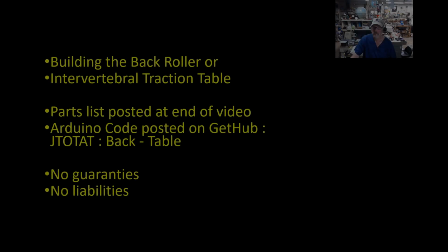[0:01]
Well, this video is a follow-up of my video I had on my back rolling table or my intervertebral traction table. I've had some requests for some additional information, so this is what this video is all about. I've gone ahead and uploaded the Arduino code to GitHub under the JTOTAT channel, so to speak, and it's under the repository back table. You can just download the code there.
And again, there's no guarantees here. I'm doing the best I can to make sure everything is accurate. No liabilities implied. You're on your own building this thing, and if you screw it up, well, you'll learn by it. But go in here kind of with your eyes open. This is a big project.
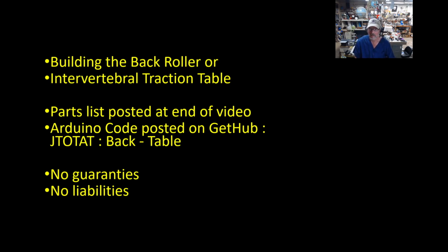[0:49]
For me to build this, I had to be able to weld, for my version anyway, weld aluminum and weld steel, and do woodworking projects, with some skills in wiring and coding. Then put them all together with a powertrain and have it work. And I think it's well worth it. I've really enjoyed the outcome, and other people have enjoyed it as well. But I can see why these things cost thousands of dollars, because there is a lot of work in building these things. But if you want to go this route, that's what this video is all about.
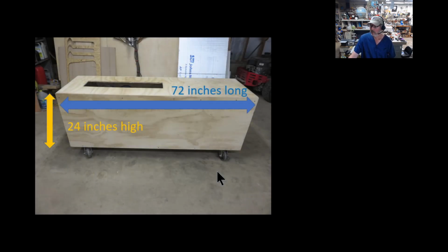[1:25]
So first off, build a box. Now it looks like it's not very square, but that's just a camera perspective. It's 72 inches long, 24 inches high, and I used 5-ply plywood. Pretty good grade of plywood here too.
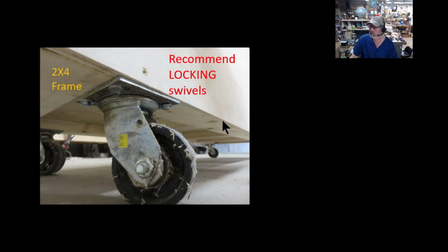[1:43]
I really recommend the locking swivels, because I found out when people get up in this thing, including myself, you're dizzy. It's universal, everyone who has used this, when they first get up, says, wow, I'm dizzy. If I had put locking swivels on this, then if they have to use the table to brace themselves, it's not going to roll away.
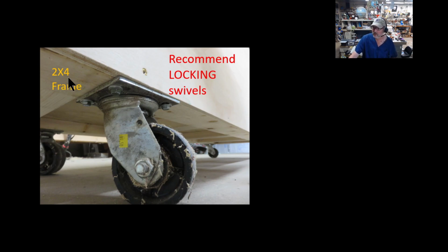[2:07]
You can see some additional framing of 2x4s I used here, because there's a lot of stress inside this plywood box. There's another box inside that rolls back and forth, and lots of weights, and I'm on top of it and everything. So instead of just having the plywood taking all that stress, I put some additional bracing underneath, and it's been working fantastic.
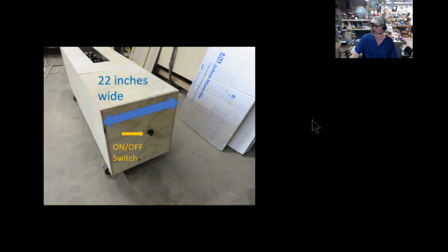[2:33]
It's 22 inches wide. Now the top you see here is not securely fastened onto it. It just sits into a little recessed area. I did mount an exterior switch. This is nothing more than a cutoff switch to the battery. When you flip it on, it energizes the Arduino. It homes itself and starts the whole routine.
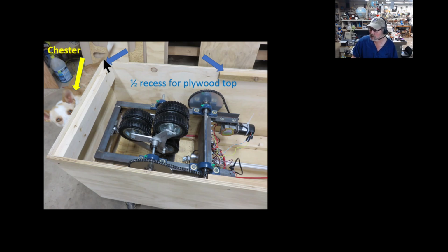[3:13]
And the way this thing does it, I talked about that in my video. It does half the back in one direction, and then it reverses the motor direction for the wheels, and so it helps to decompress both areas. It's been working good. The top I just recessed with 2x4s and some 1x's here, and that's what the top fits into. And there's Chester. I didn't even realize he was in this picture until I saw it later. And the braces don't even go around the perimeter. I did not need them all the way around, the plywood itself has enough strength to span that.
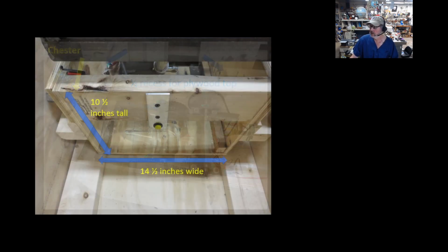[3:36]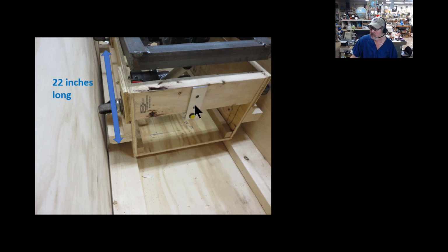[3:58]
It is 10 and 1/2 inches tall and 14 and 1/2 inches wide. This is the interior box that is pushed and pulled along, and this is the box that holds all the gears, all the motor and all the electronics. It's very strong. There's a 2x6 here in the back. The other, it's 22 inches long. Here's the 2x6 I was just talking about. It's also made of the 5-ply plywood.
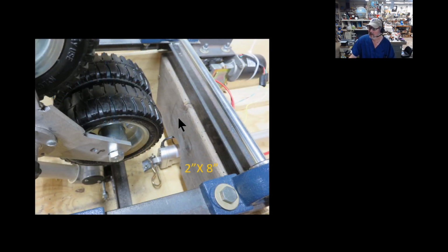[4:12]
I put in some additional shims for these extra casters. I'll talk about why they're there. There's the backside. It's actually a 2x8 I used in the backside, and this thing's all lagged together and very strong. I did cut a notch on the bottom 2x8. That's just for the 24-inch linear actuator that actually pushes and pulls this whole mechanism back and forth.
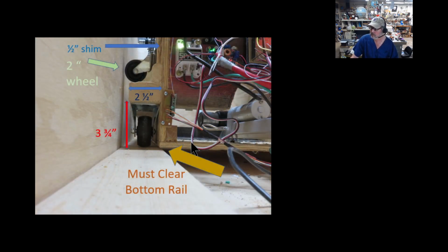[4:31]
I couldn't easily measure these when it's already built, but it doesn't really make that much of a difference, because if it's higher or lower, you'll just have to adjust where you put this 2.5-inch cut down 2x4, for my size. As long as it clears in the bottom.
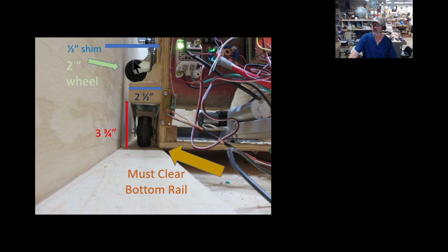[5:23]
Now, the reason these top casters are on here with this little shim to get them in the right position, is because there's no tracking mechanism. This thing just pushes back and forth. So these casters, and I had 2 fixed and 2 swivel, and if I would have had all fixed, I would have used that, but this is what I had on hand.
Their job is to keep this tracking correctly. So if it gets close to one side, the caster takes over and pushes it back, and I'm sure these are working. I never hear them. I've never had a problem, so if it's not broken, I'm not going to fix it. You can see in the picture here, I did add a little bit extra bracing on this 2.5-inch piece here, because there's a lot of stress on this. I'm on it, the motor's on it, everything's on it, so yeah, I want to make this pretty strong.
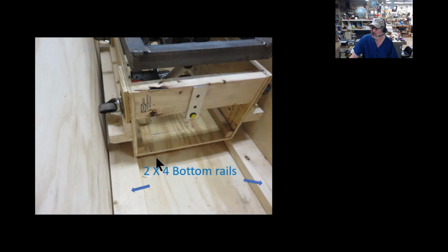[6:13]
Okay, I used these 2x4 bottom rails, and again, I made this a little bit bigger than I had to, because this is the first and only one I've ever built of these things, and I wanted to make sure I had plenty of space. However, when this is just dragging on the bottom on the plywood, the revolving wheels were pretty far below, an inch and a half below the plywood. And I thought it was just a lot of extra time, but you had to activate the wheels to raise it up above the plywood.
So actually lifting it up 1.5 inches on these 2x4s, an inch and a half thick, took the roller right to the top of the plywood where it should be. So when the roller top is all the way down, the wheels are just the height of the plywood. And that's nice because you hardly even feel it, but then you can control it up and down with your little remote.
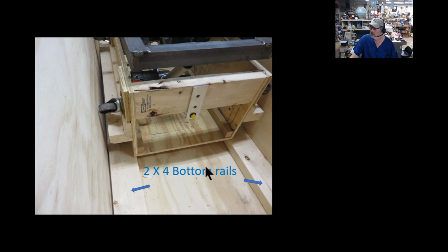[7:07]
So now on top of that box I built this framework of iron or steel here, and it's 14 1/4 inch by 21 inches long. However, it's got some extensions. On this side, you can see back here, it's extended out a little bit because I have to have that pillow block bolted to something. And I also put this extension on the other side with the motor, and that's actually not the top though. That's another piece of angle iron I welded on upside down. I'll explain why I put that on there to help hold the motor here too.
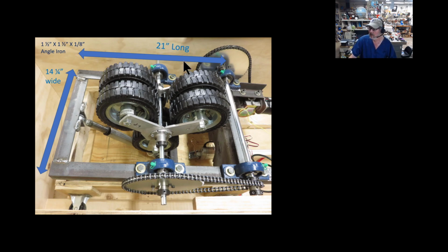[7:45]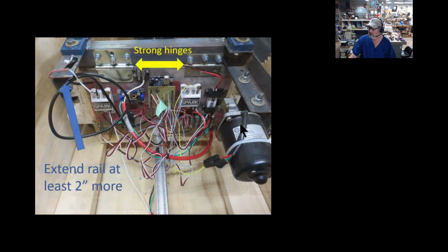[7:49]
So this whole thing is actually one piece, and it actually pivots on the back here. In fact, this is what I'm using. I didn't even have a pair of hinges, but I had these 2 strong hinges. I just used what I had, and I drilled a hole where I needed to, and bolted the hinges on, screwed them to the 2x8, and it's very strong, had no problem with it.
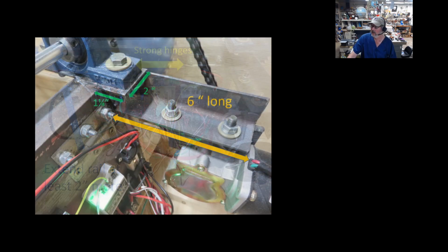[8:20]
Now this is the 2 inches. I recommend you extend the rails at least 2 inches on this one side. That'll give you space to put the bolt for the pillow block on that side, and the pillow bearing on that side. And the other side, I welded the 6-inch long extension. The reason for that is, when this thing raises up, the motor hanging under it is going to get closer to the electronics. So you've got to get this far enough back so you're not going to have any conflicts of this thing hitting any of the electronics back there. And it will not get up that high to get that close. So this works fine for me, 6 inches here.
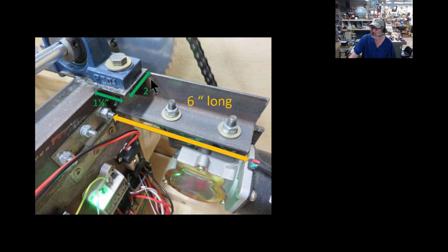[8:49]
Now again, I just used this 1.5 inch by 1.5 inch by 1/8 inch angle iron, same thing I made the frame out of here. And I welded another section here of 1 1/4 by 2 inches just on top. And it doesn't quite look like it on the picture here, but this is all one plane. These pillow block bearings like to be bolted on one surface, one smooth surface. So I welded it up and ground it down, and it works just fine.
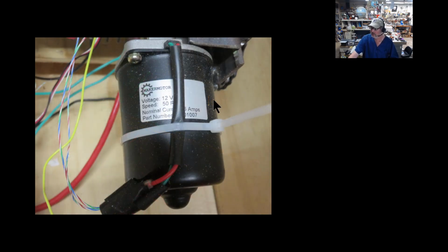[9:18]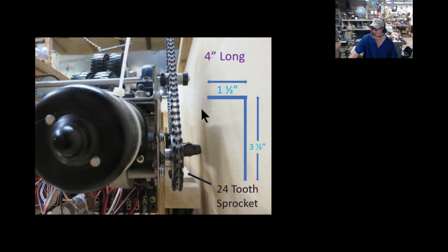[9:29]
Now, to mount this motor, this is the 12-volt, 50 RPM maker motor. You can just look that up, and they still sell these things. To mount this, I took that same 1.5 inch angle iron, and what I did, I welded another 2-inch piece on that. So the angle iron now is 1.5 inch by 3.5 inches, and that's this piece that you have a hard time seeing here, but I bolted that in underneath of that additional piece of angle iron. I put it upside down. This is why it would mate correctly. And I also have the 24 tooth sprocket, and all my sprockets and chains are size 35.
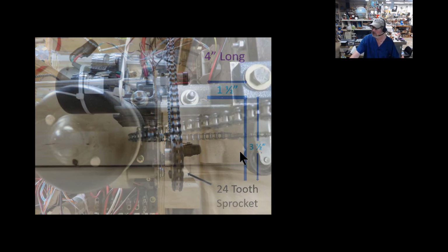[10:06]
It's just made it convenient that way. So, and this piece that holds the motor is also 4 inches long. Here's another picture of it from the top. There's the 4-inch length I have where I bolted it to. And there's 4 holes drilled in that. A big hole right in the middle, that's the D shaft coming from the motor. Then there's 3 additional corresponding holes that line up to the holes that mount the motor on here.
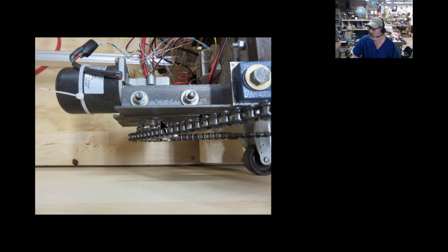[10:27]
So I've not really had a problem with that. And again, I drill my holes a little bit oversized. It gives me a little room to fudge around and push them back and forth. And the pillow blocks are nice because they have an elongated hole, so you can still have a little bit of adjustment where they go to and make sure you're chained. But I would recommend getting some chain couplers and even some chain and a half couplers, so you can actually get increments of how much spacing you need to increase your chain if necessary.
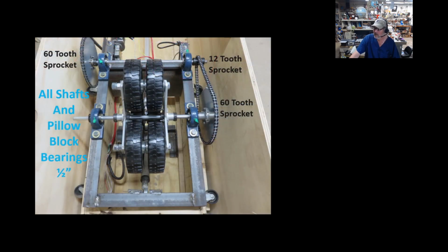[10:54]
Okay, from that 24 tooth sprocket, this is how I reduced that motor. I reduced the speed and increased the torque because by itself it's just not strong enough. However, with this configuration it is uber strong. So that 24 tooth sprocket goes up to a 60 tooth sprocket. Of course, that transfers the power across to this 12 tooth sprocket up to another 60 tooth sprocket. So I've really reduced my speed but increased my torque here.
Now everything here, all the shafts, everything's 1/2 inch. All the pillow blocks are 1/2 inch, the stops are 1/2 inch, everything's 1/2 inch. Now you can't see it very well, but these are keyed shafts too, because this sprocket hub here has a key in it. Now it does have a little slop to it, and I'll explain that's probably not a bad thing, but this is how I reduced it down.
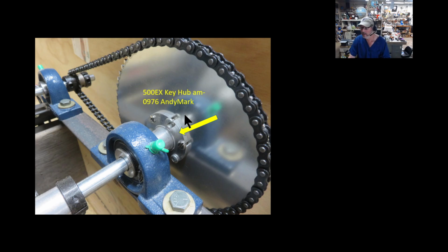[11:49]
This is that key hub I was just talking about. It's actually, there's no set screw in it. And originally I was thinking, well, because it has a little slop, and when you get on your back, it raises up, and then it starts going downhill, so to speak, it'll jump just a little bit. And it may be one of these lucky happenstances because it gives you just a little bit of a jarringness, and that's sort of not a bad thing sometimes. I think the chiropractors use that type of phenomenon. I don't know, but it may wear this piece longer. If it does, I'll replace it, but it's going to take a long time before it probably wears this one down. But I like these hubs because you can mount them to any of these style of sprockets.
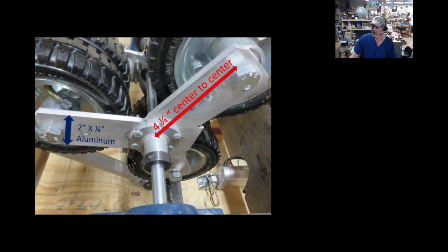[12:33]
In fact, I use this same type of hub to mount my aluminum wheel holder. And this aluminum wheel holder may be a sticking point if you're designing this and can't weld aluminum. It's the only piece I really used aluminum to weld up, but I'm pretty certain you probably could make this out of that Baltic birch plywood. You know, the stuff that's got uber layers, almost like veneer type of construction. If you had a couple pieces of 1/2 inch or 3 pieces of 1/4 inch glued up with that Baltic birch plywood, I think that would be plenty strong. That stuff is very strong.
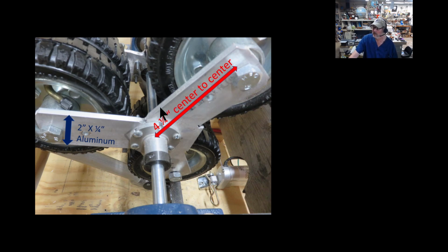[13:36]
But for me, I can weld up aluminum, and it's easy to machine, and that's why I use aluminum. And you can see how this was easily put together. I had this 2 inch by 1/4 inch piece of aluminum bar, which I just have the straight bar here. But then I cut this. I think it was a 60 degree cut, because that'd be a 120 or 180 for length. But once I got it all welded up, ground down flat, I just put my compass around it, and the holes are 4 1/4 inch center to center, equally spaced around. And once I got this first one made, I used it as a template for the back one, because that's what holds all these wheels on here. It's been working fantastic. Again, I have to have some stops here because there's no set screw in this particular hub, as I talked about. It just kind of keeps it centered.
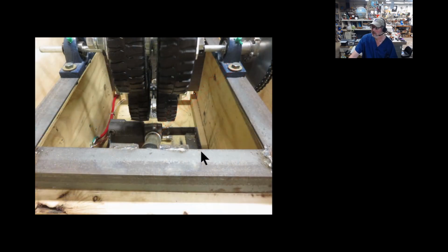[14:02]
And also, I would recommend the linear actuator I used. I got these out of a wheelchair I was tearing apart for parts, and these have about a 12 or 13 inch total distance. Okay, these are very strong. I don't know how many pounds are put out, but there is an equivalent on this Firgelli. I think that's how it's pronounced, on linear motors. They have a whole series or two that these things would also work. If you get a 12 inch, it would be perfectly fine.
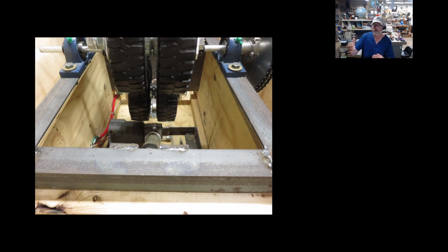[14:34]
However, I'm only probably using 4 or 5 inches of travel total when this thing lifts up, because it only raises the wheels up a maximum of about 4 inches above the plywood, which is really too high. It's very uncomfortable. I don't think you really want to run it that high. In fact, I found out if I decrease the height so it's not so vigorous on me, it's just running up and down my back, it's put me to sleep several times, which is kind of bizarre, but it's a very comforting thing.
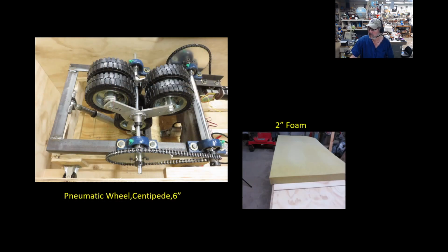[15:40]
But my point is that if you mount these bearings first, you might hit that linear actuator. So I would really recommend you put the linear actuator on first and make sure you get clearance, because this thing has pretty tight tolerances, and when these wheels rotate, they get pretty close to this linear actuator here. They don't hit it, they can't hit it, and it gets better as it raises up, and when it's all the way down, that's about the closest it's going to be. So put that on first, then you'll know exactly where to put your bearing blocks, and make sure the wheels will miss it.
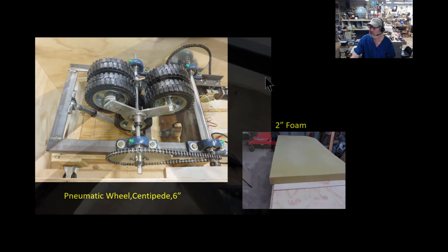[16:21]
Now I use pneumatic wheels, however I'm running them flat. There's no pressure in these things. I could not find the right wheel that had the right amount of cushiness and was also firm, and I figured this is a good compromise. So I'm running these 6-inch wheels flat. However, you can see here I'm actually using some 2 inches of foam. I had this piece left over, and that really makes it much more comfortable. These wheels do a nice job. They're firm enough, but almost too firm to run directly on your back. That's why this foam works really well. I got these from Zoro, and they're listed in the part list in the back of this video.
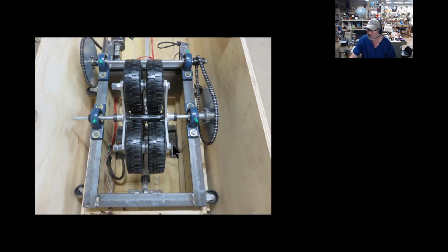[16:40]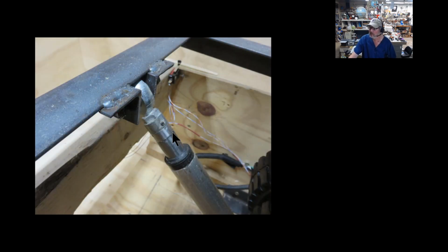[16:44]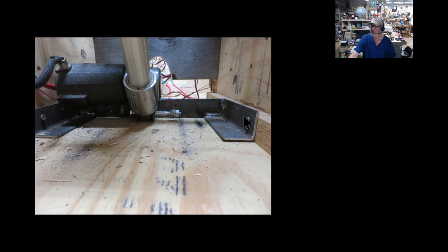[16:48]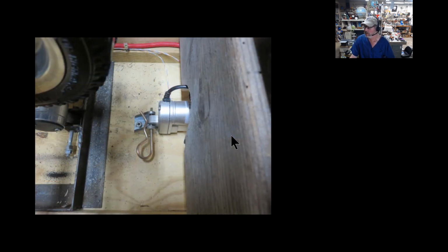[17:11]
This is how I mounted them. Mounted the linear actuator. I just cut some more pieces of angle iron, same angle iron, drilled some holes through it, and welded them in place. This had to be pretty strong since it lifts me and everything up with it. I did the same on the other end. Here you can see the outside of it. This is the one I mounted underneath the wheels, and again, I thought this needed a little bit more strength than just bolting to the plywood. So I welded up another piece here, same type of construction, angle iron in here, dual holes across, and I put this very long bolt in because that's just what I have at that size. But yeah, I thought this needed a little bit extra strength to hold it together.
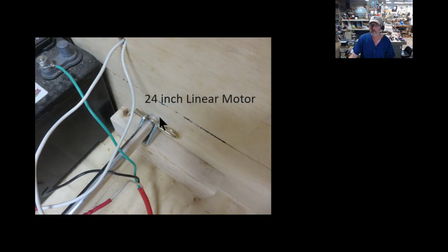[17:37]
Here's a back picture of it. And here's the other linear actuator. This is the 24-inch one. This is the one that actually pulls the whole box back and forth. It does not need to be near as strong because, well, first off, it's not lifting me, and I'm about 6'4", 230 or so, and this covers my whole back area. I like the distance of it. But again, this doesn't have to be that strong. I did just manage to attach it to the plywood in the box, and then on the other end, I attached that 2x4 to the box, lagged it from the outside and bottom, and then put this little pin in the bottom here too.
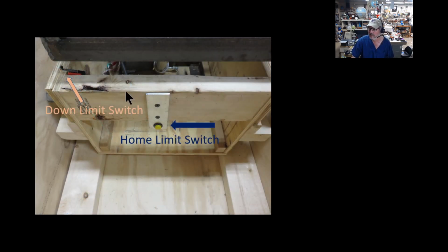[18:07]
Now, you can see I'm just running a battery. This runs on a 12 volt battery here. I do have to charge it up once a month or so, depending on how much I use it. But that made it real simple to use. Nothing plugged in, no cords, and all independent. So I really recommend that.
Now, I did add some homing and some limit switches. When you first power this thing on, it will actually take the whole box and drag it all the way to the head of the box, and then the software starts and the wheels start turning around. So this is nothing more than a normally open switch, which I mounted into a piece of aluminum and just screwed on the end, and so that hits the wall when it gets all the way up there.
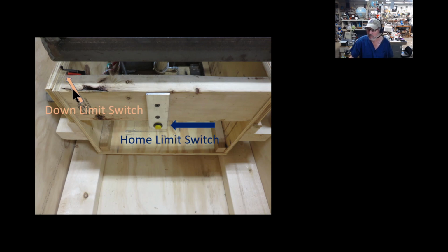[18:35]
Now, I do have another limit switch. This is the down limit switch of the whole top mechanism. When it comes down, it'll trigger that switch, telling the software it's all the way down and not to go further. I do not have limit switches on the other end for how high it'll go. In fact, this thing will go so high, it'll actually lift you and the plywood up. That's something I found out. So you'll know it when it's too high.
And I count the number of repetitions. It starts, you hear the linear actuator move a little bit and then a little bit as the wheels roll, and it counts how many revolutions that moves. I think I'm around 70 or so. It'll say I'm at 70 and then reset itself.
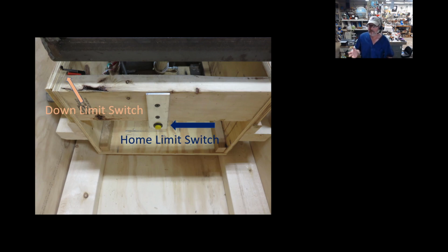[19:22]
And the software is not elegant because with the remote, you just can't push it any time, because it's actually not an interrupt. When the linear actuator motor, the length one, when you hear that moving, then it's active. You can push the button on that and hold the button. You'll see that in the software. If you just try to push it, it may not be looking at that pin at that right time. Like I said, it's pretty crude software, but if you know how to run it, it's been working fantastic.
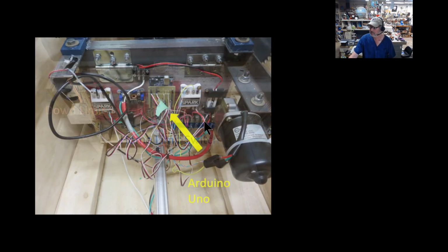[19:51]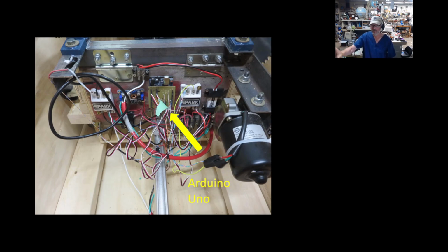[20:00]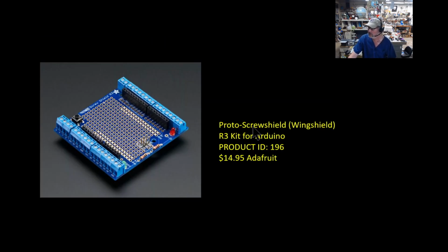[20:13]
So I do use an Arduino Uno for this, which I had this custom shield made. This is not even made for this project. This is one I just had left over from another project, but things are so similar. However, you don't have to get into making printed circuit boards to do this. I found this proto shield from Adafruit, and it would be just perfectly fine. This will give you pins necessary to solder your pins on for your 3 pins for your Rev Spark controllers. It would be screw terminals to make it nice and easy. SparkFun also has a version, although theirs is all solder instead of the screw terminals. But if I did not have a custom shield already made, I probably would have used this.
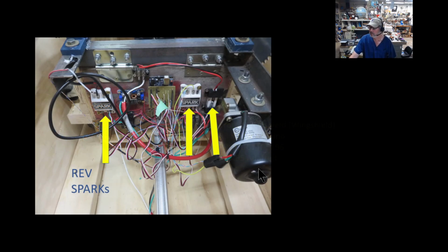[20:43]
So I like these Rev Spark motor controllers. I had these big ones on hand. These things will theoretically do like 60 amps, so I'm really underutilizing these things. I probably could have got by using the minis for all these, but I do like the screw terminals. It makes it real easy to connect things. If you're going to build this particular device, I really would recommend getting these ordered and start playing with them, and the code. They work great. The only problems I've ever had with these things is if you have an LCD monitor. Sometimes the LCD interrupts will interfere with these servo controllers, and you'll get a little jerking and movement sometimes that you do not expect. But there are software workarounds for that too. But I'm not using any LCD in this project, so it was not a problem.
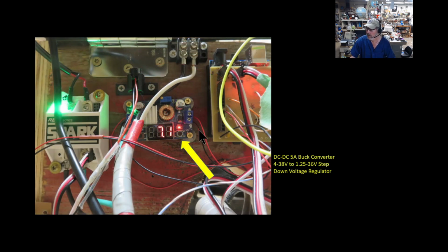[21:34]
I do not use the LM05 or LM08 linear voltage regulators anymore. They're just too inefficient, and when I get close to using their capacity, they start heating up and they start giving me all sorts of various voltage. And if you're ever using any analog inputs, it will really screw up that signal because your reference voltage is moving around. So I've been using these little DC-DC 5 amp buck converters. I get these from Amazon, a 2-pack, and I really like these things. And you can see right now I'm only running 7.1 volts because my battery needs charging. I usually run these things around, I think, 8.5 volts, something like that.
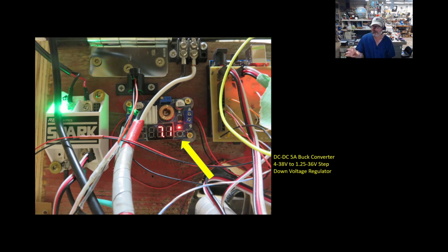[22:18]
And the reason this is necessary is that with this lead acid battery that I'm using, when you charge that thing up, you may get 13, 14 volts out of it, and that's more than the Arduino is really going to like. So it's nice to regulate that voltage coming in to a safe level. There are 2 switches on this thing. If I push this switch, it would show me the input voltage. However, I have this one active on the output, and that just shows me the output voltage going right to the Arduino.
These are the 3 pins I was talking about that hook up all your Rev Sparks. And again, even if you had the Proto Shield, you could just solder 3 pins, because all this is your output signal, your voltage, and then your ground, the 3 wires going to your Spark Rev controller. Of course, the other end has to do with the voltage and power, and then the motor contacts.
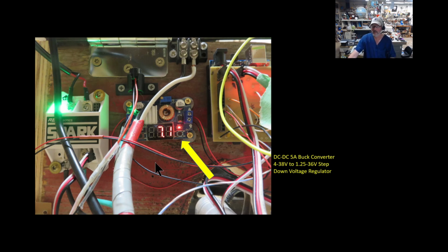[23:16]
And all these pieces, I just went ahead and screwed them to this 2x8, made it real simple. It's kind of like a rat's nest of wires, but most of the stuff is just routing the ground and routing the voltage to different places. And I did try to contain these wires so nothing is dragging, which is helpful.
What you also see in this picture here is a little piezo buzzer I just mounted in a 3D printed little holder. And when you push the remote, it will give you different lengths of tone, meaning it received the signal for this or for that. And I do use a lot of these little bus connectors to help distribute the voltage around. There's another big batch of them over here, because you need a lot of grounds and a lot of voltages to hook up to everything.
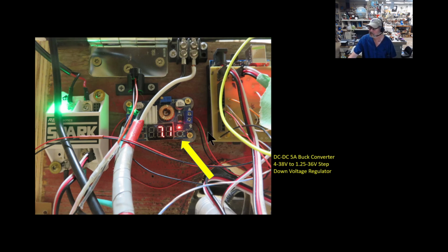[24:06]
Now, this is the remote I use. I had a printed circuit board already designed for this, and I'm using this one, but you probably could just do this on the prototype board, because it's kind of simple. There's only 2 wires here going to voltage and ground, and these 4 output wires, which go high, meaning there's 5 volts on each line, when a corresponding button is pushed. This other blue and orange one here is just the antenna. I route that out of the way.
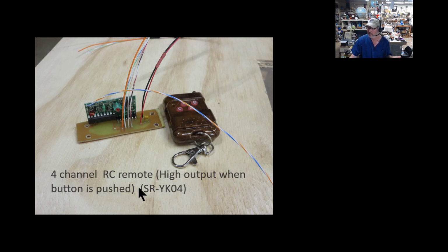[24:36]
Now, the only information I had about this, on the back of the board, it says SR-YK04. I bought these a long time ago. They may be rolling code, but that doesn't really make a difference on this particular one. But this really makes this machine come alive, because I can stop it at one spot if I want to work. I can raise it up and down, or just reset the whole thing. So I really like this controller to make this a little bit of a smarter machine.
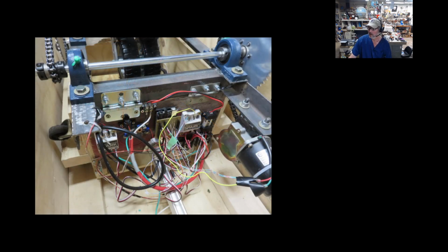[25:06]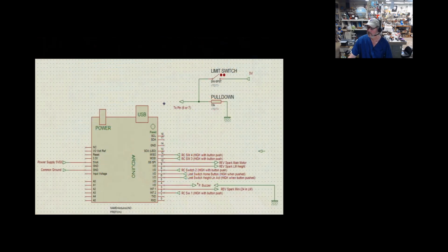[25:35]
Okay, like I said, more of a rat's nest here, but it's nice to have these on board. This is my remote down here. It's nice to have everything attached, because if I had switches on the side, then the wires are getting pushed and pulled and stretched and bent, and I like everything contained on the back, even though it's kind of a mess. Here are my other buses I was talking about over here. It's been working just fine.
Here's my schematic, simplified as it is. Now, you are going to need a couple of pull down resistors. What a pull down resistor does: if you just have a pin hooked to a switch, that pin may be getting some stray voltage, and there's a lot of stuff fluctuating around, and it may trigger when you don't want it to. What a pull down does with the 10K resistor here is pull that pin down to ground, but when you do hit the switch, so much 5-volt current goes through that it overcomes that resistor, and you get a definite signal that you've actually had a button push. And you'll need two of those.
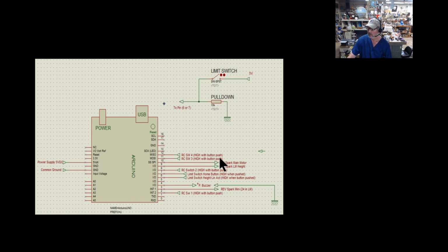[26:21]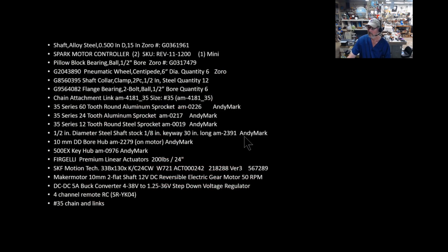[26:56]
Two resistors for the pull down switches on both the home button as well as the top down button. I did not have to use them for the outputs from the remote control, because they seemed like they had their own pull down built in. Never had a problem with that. Here's a piezoelectric down here, plus side to the pin, of course, and then ground to the black side. There's your power coming right from the power supply board and the common ground. All grounds are common. You can hook them all together here. And a lot of these numbers you can just look at the code, and you'll say, oh yeah, this is exactly what you need, because it says that pin goes here, and that's exactly what you're seeing right here. Here is my part list for all the parts.
Prices, I have no idea. Things have changed too much in this crazy world, but some are about the same. For the gearboxes, about $130 for the 24 inches, I think, and that's about the same price if you're getting the same company for the shorter one as well.